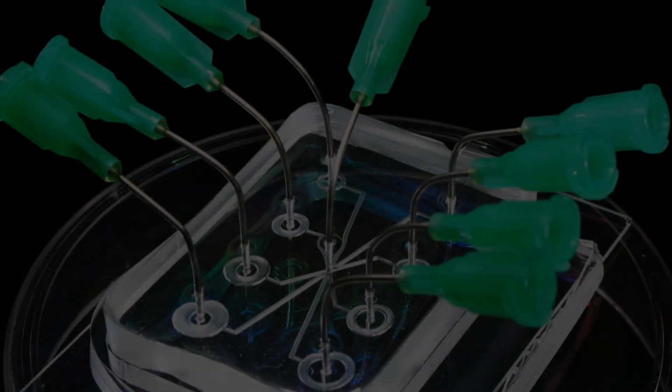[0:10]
Today we are going to build a lab on a chip. The term refers to a microfluidic system that accommodates the entire functionality of a macroscopic laboratory on a substrate about the size of a credit card, for example made of glass or plastic. This technology allows the smallest quantities of a liquid to be analyzed completely and automatically on a single chip.
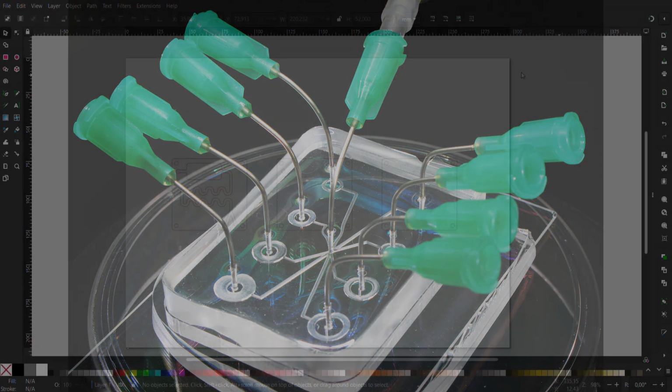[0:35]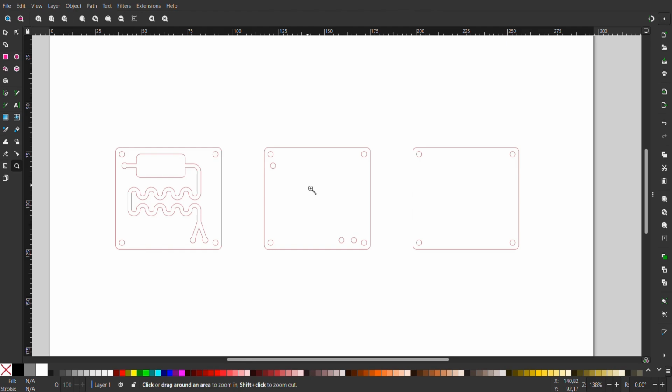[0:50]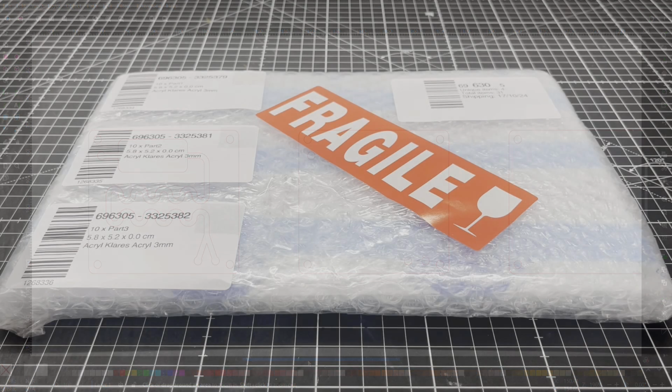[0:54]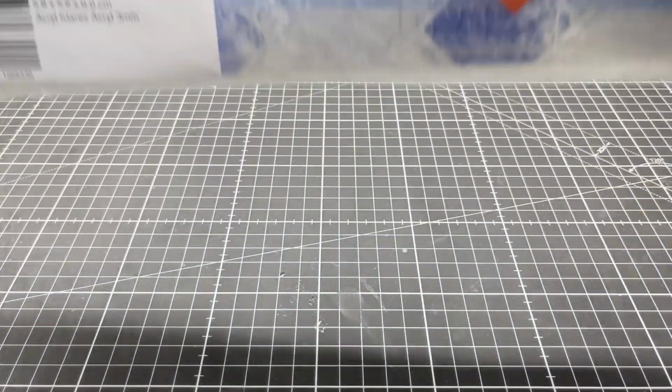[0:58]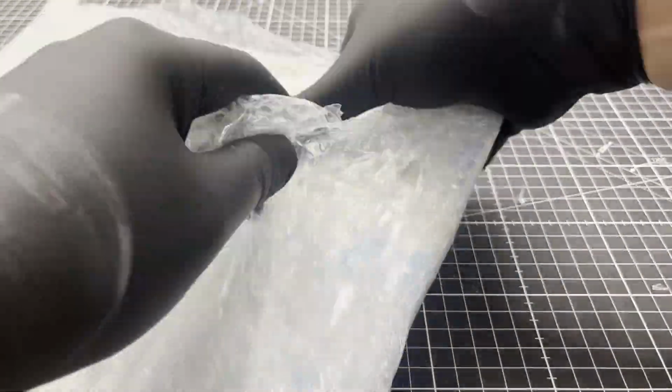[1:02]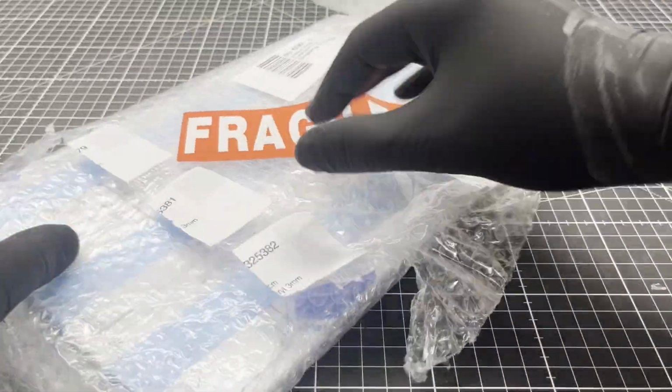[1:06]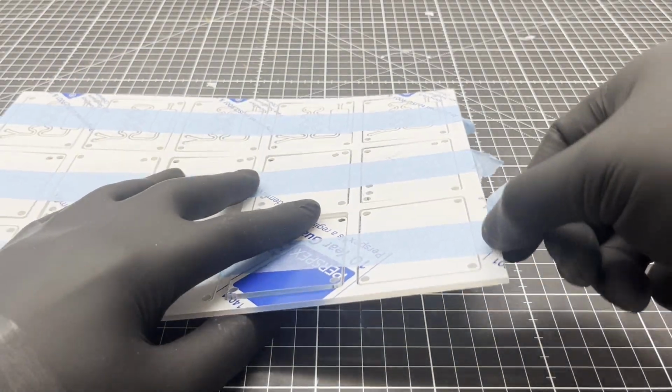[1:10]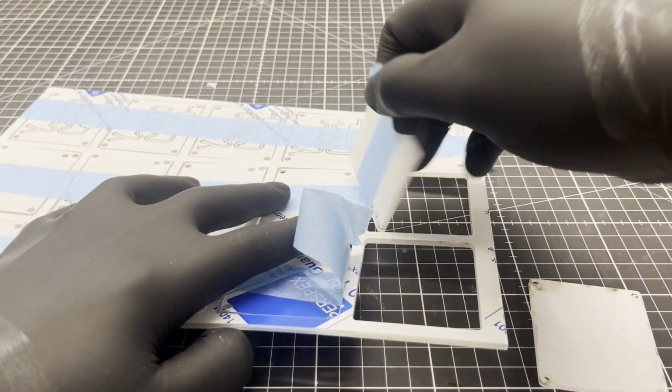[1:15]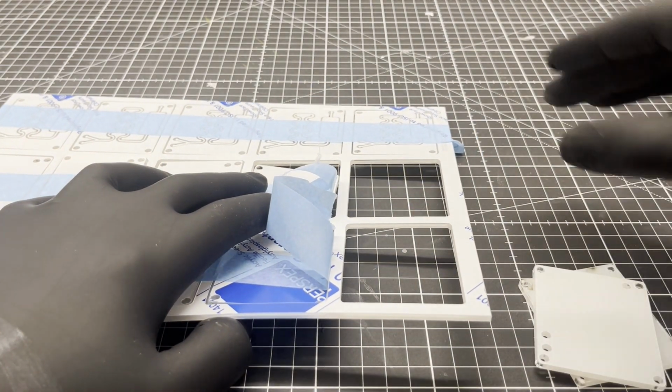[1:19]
The microfluidic device itself consists of three laser-cut 3 mm thick acrylic glass plates. I designed them in Inkscape, a freeware 2D vector drawing program. Since I don't own a laser cutter, I had the parts made by an online service. The quality of the acrylic glass that they are using is amazing. It even withstands ethanol and isopropanol.
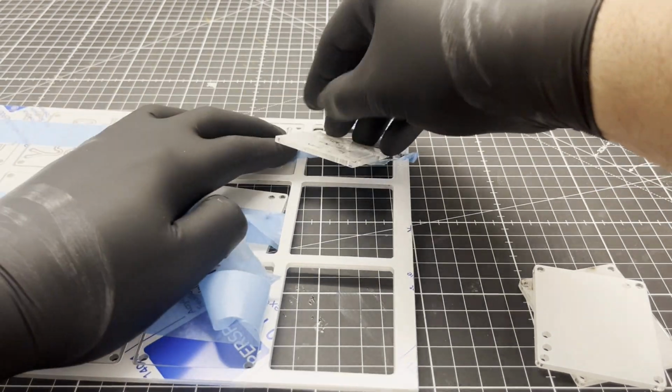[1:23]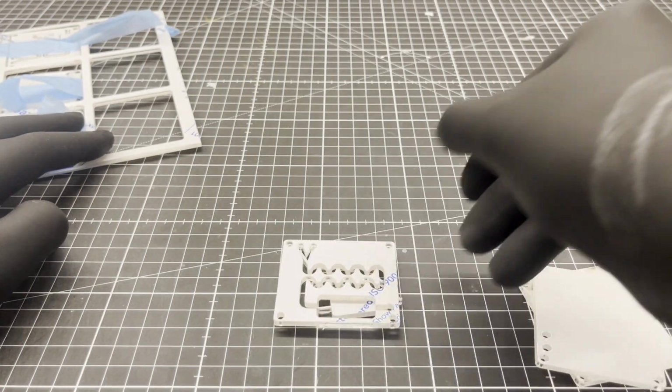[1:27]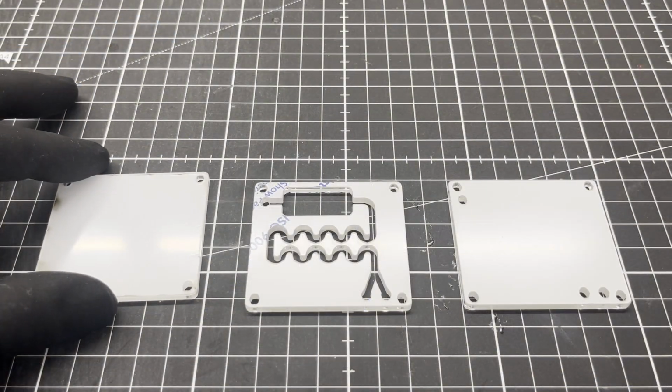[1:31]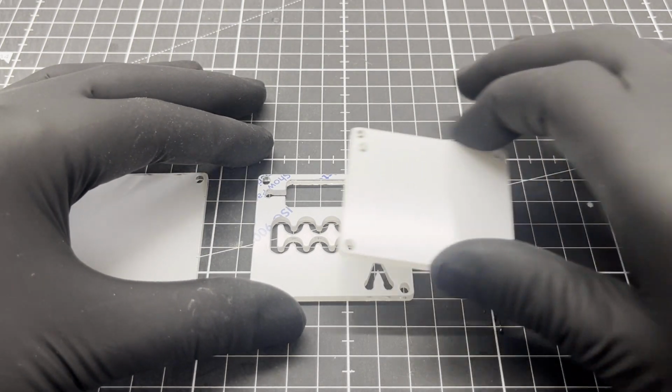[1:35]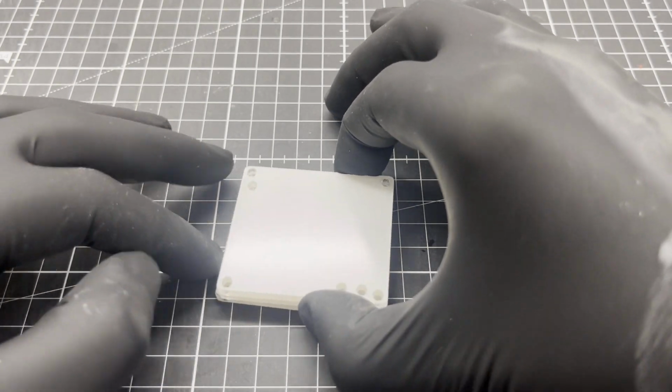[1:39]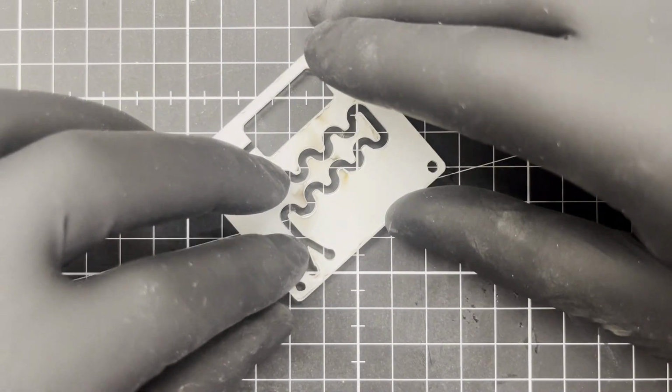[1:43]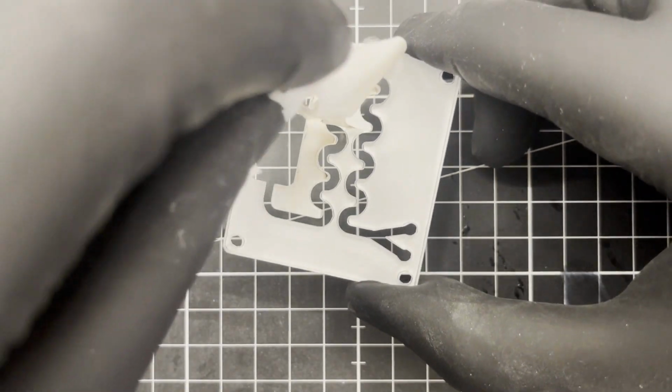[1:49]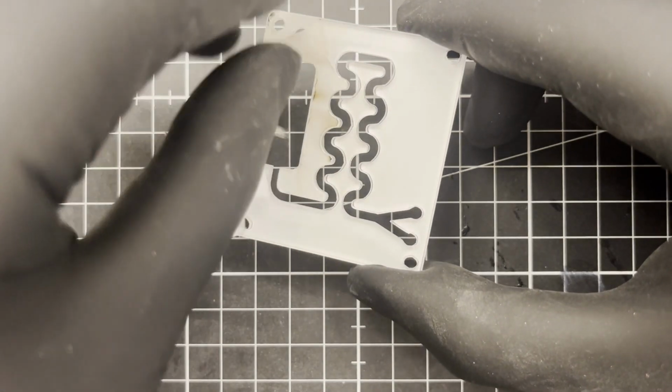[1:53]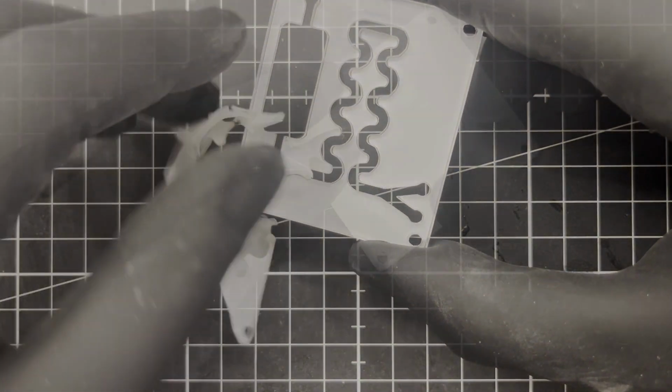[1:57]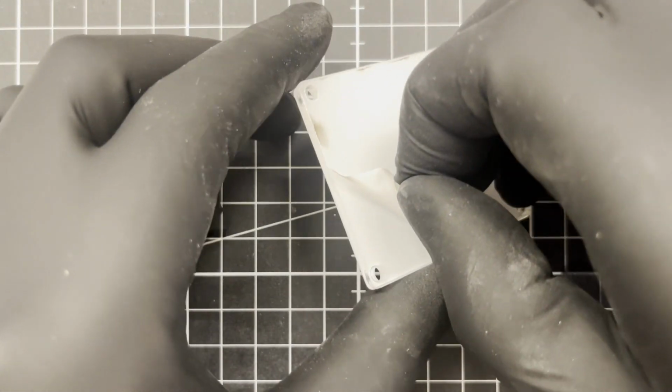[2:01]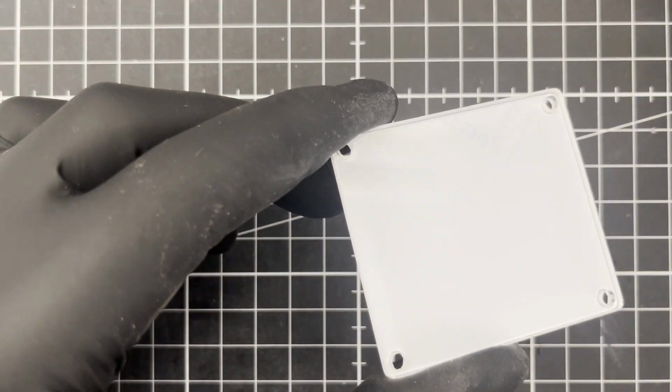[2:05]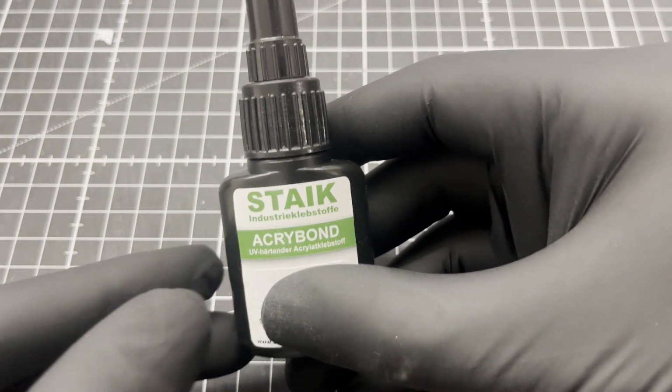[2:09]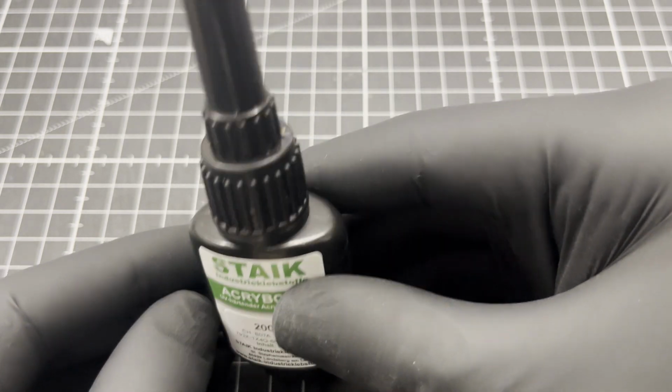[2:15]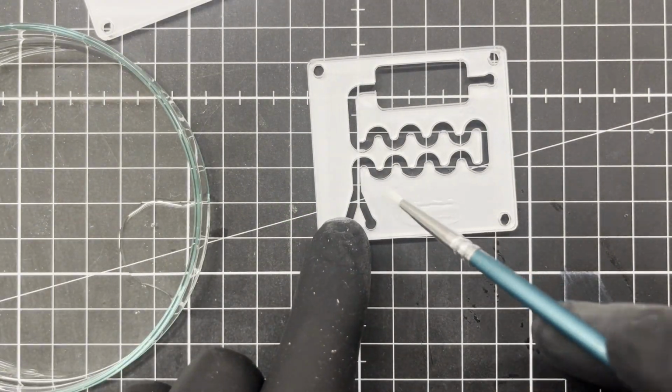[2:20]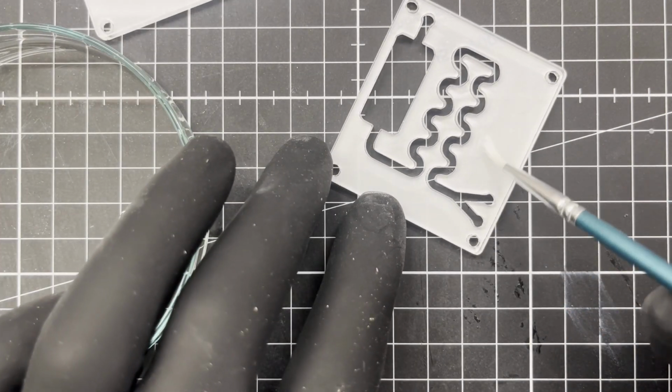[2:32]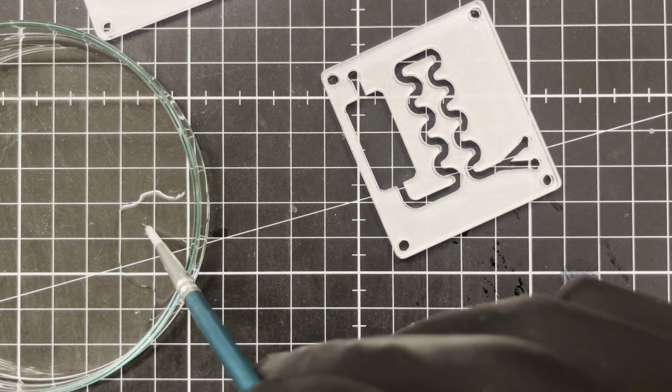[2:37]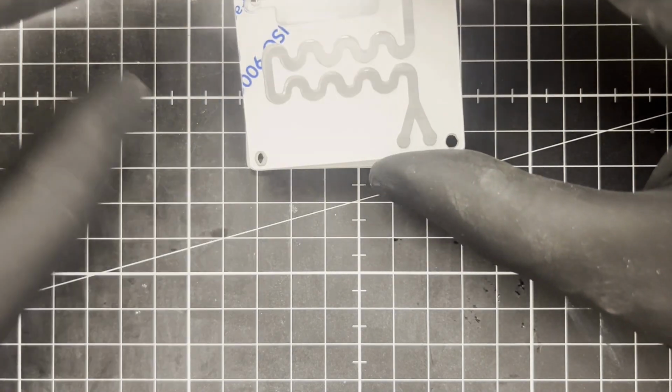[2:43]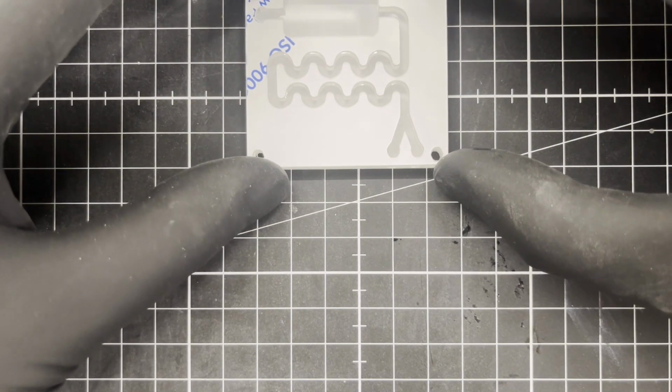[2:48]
I use a special acrylic glass adhesive. It only bonds acrylic glass and is activated by UV light. This allows corrections to be made before the final bonding. If you don't need an optical pass through the device, you can also just sandwich two laser engraved plates together. This allows much finer channels. Remember, always work as cleanly and precisely as possible, because the entropy of the universe fights back all the time.
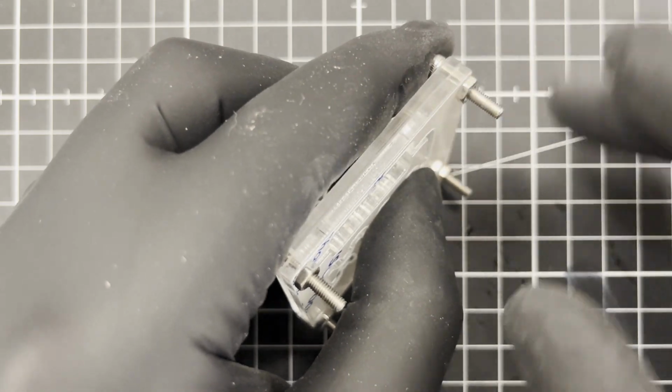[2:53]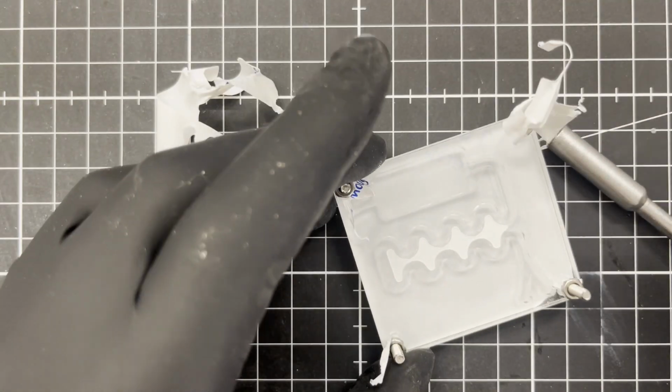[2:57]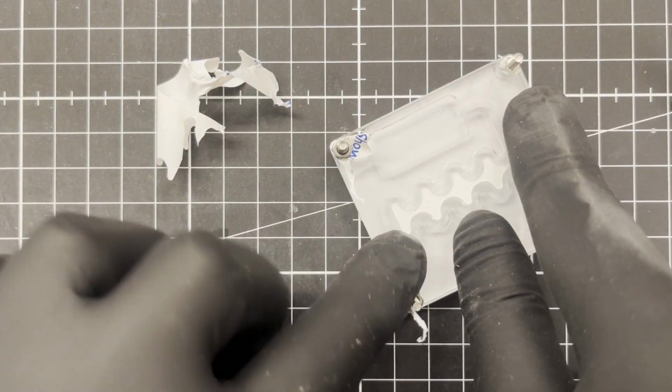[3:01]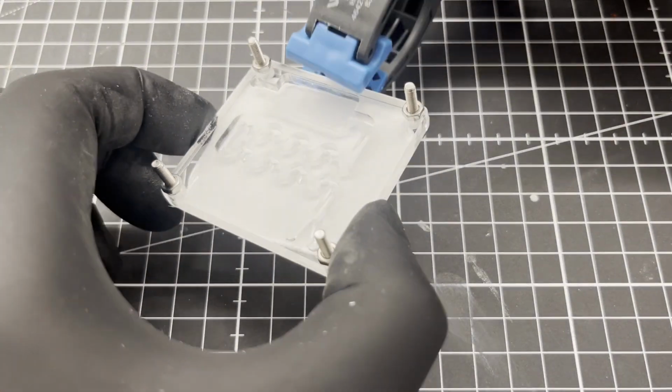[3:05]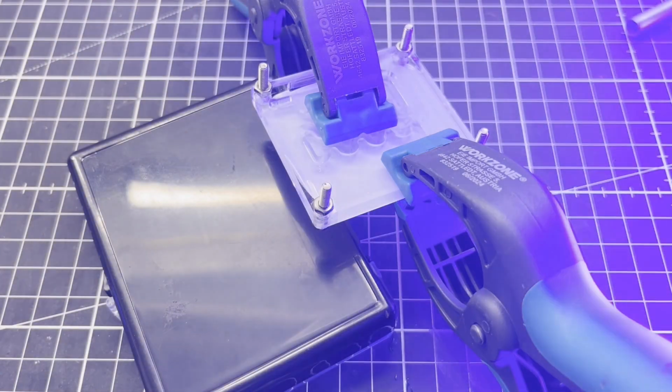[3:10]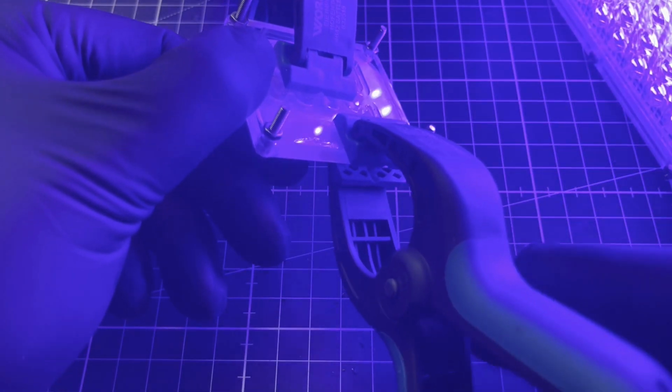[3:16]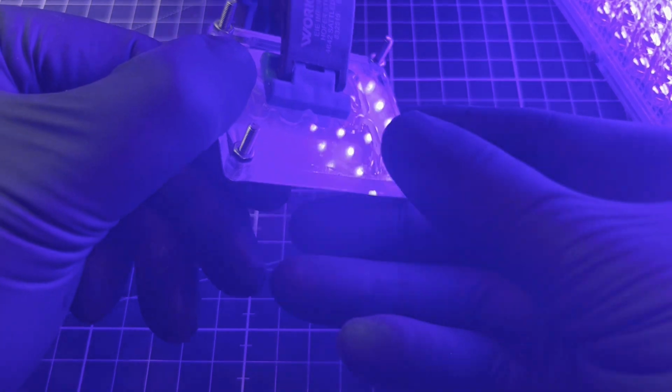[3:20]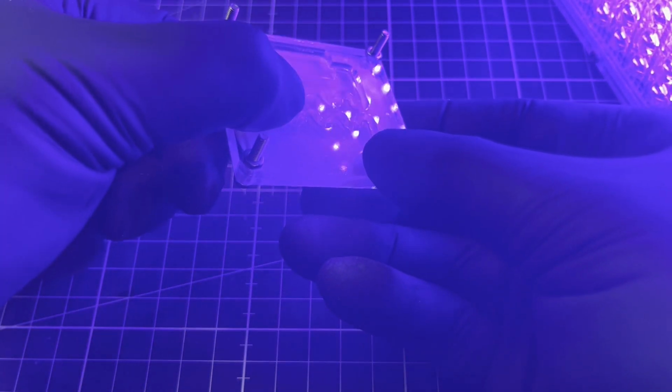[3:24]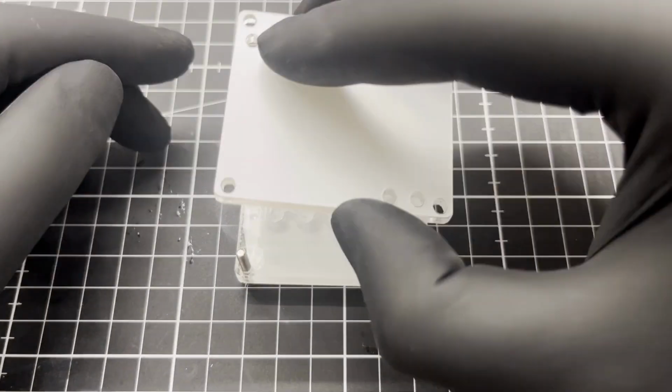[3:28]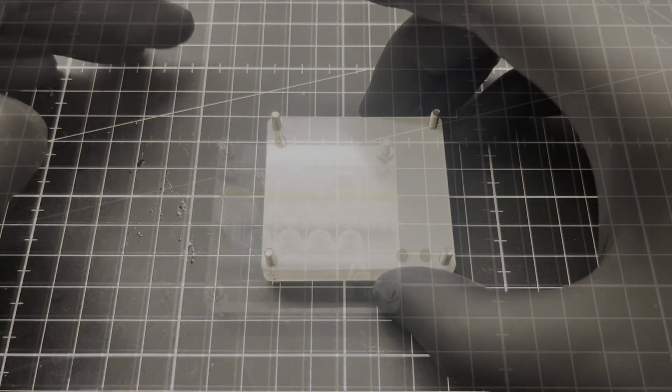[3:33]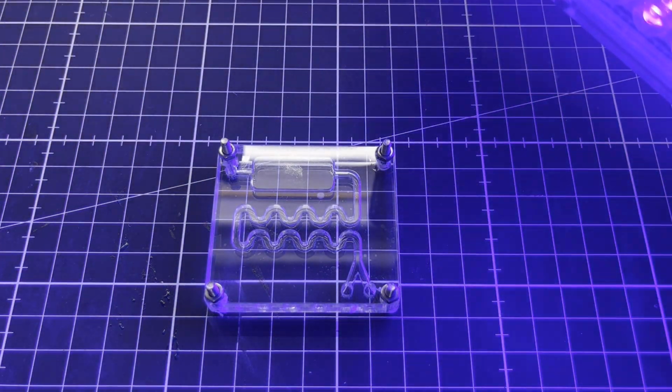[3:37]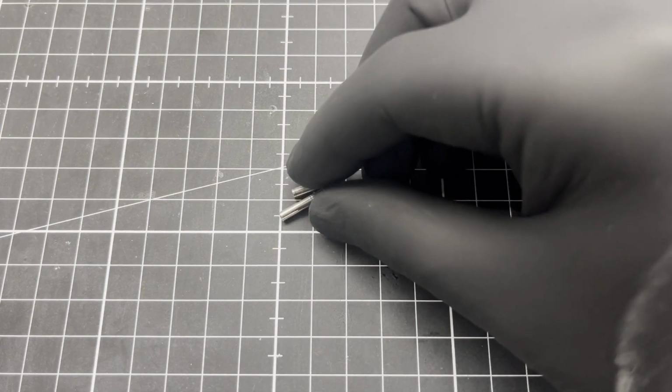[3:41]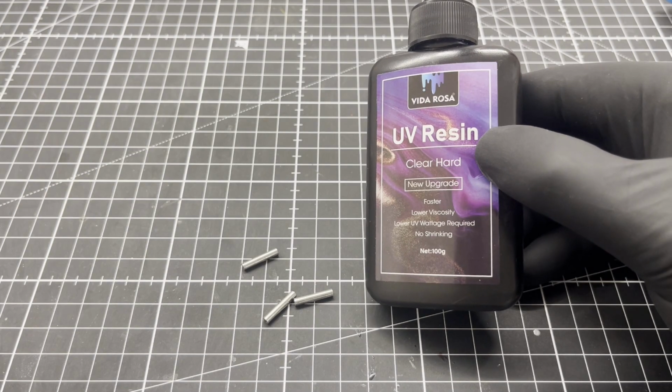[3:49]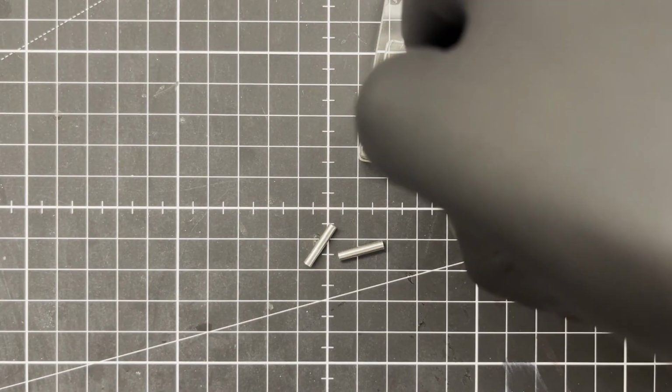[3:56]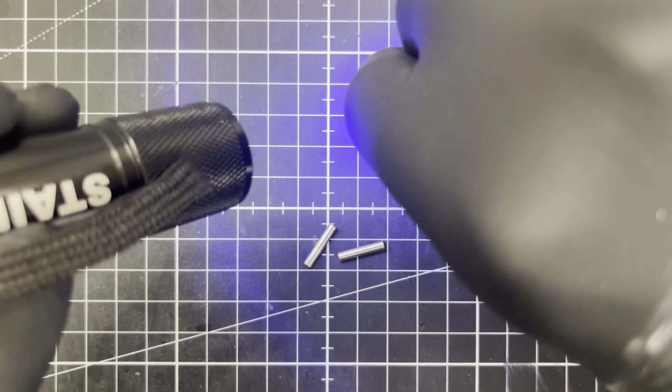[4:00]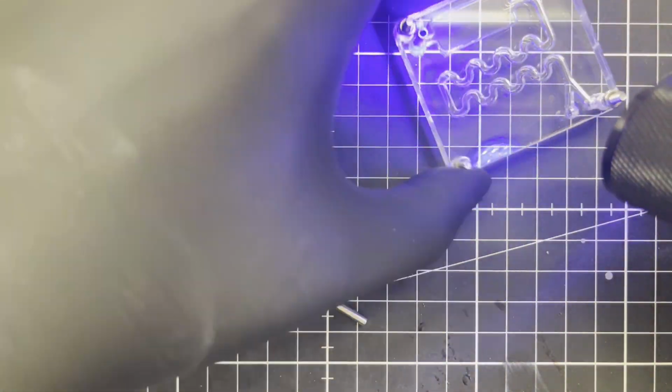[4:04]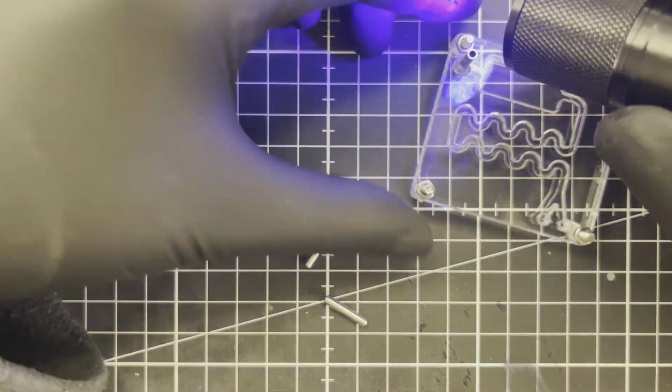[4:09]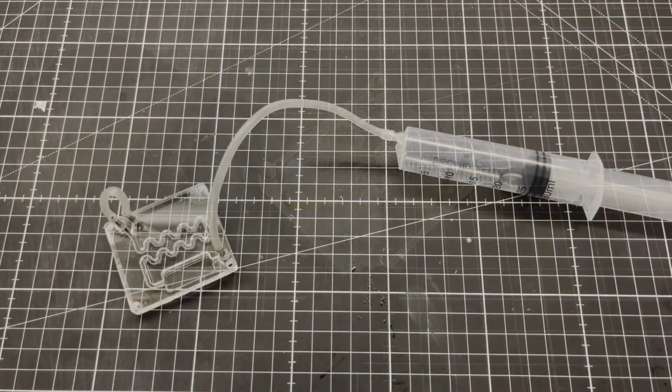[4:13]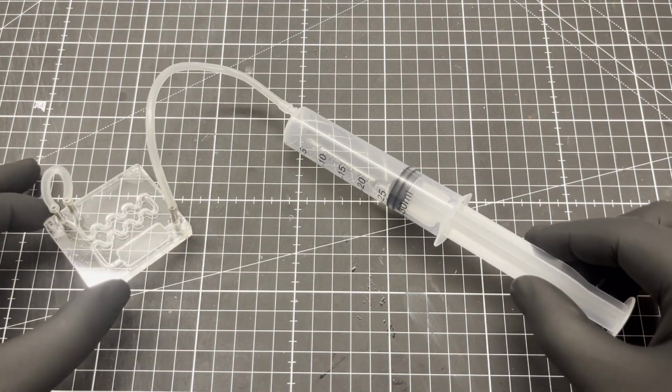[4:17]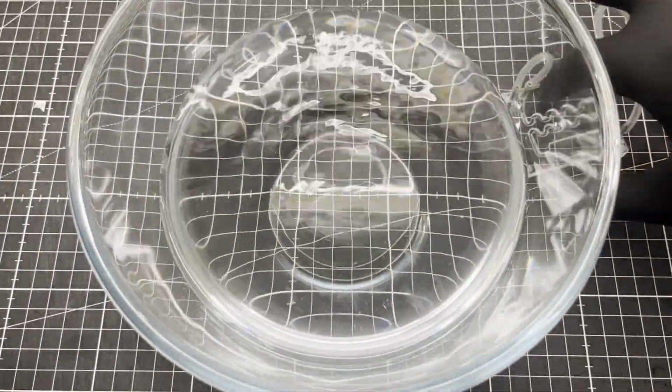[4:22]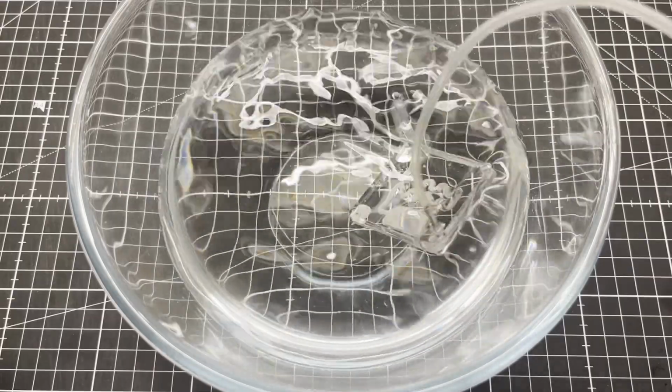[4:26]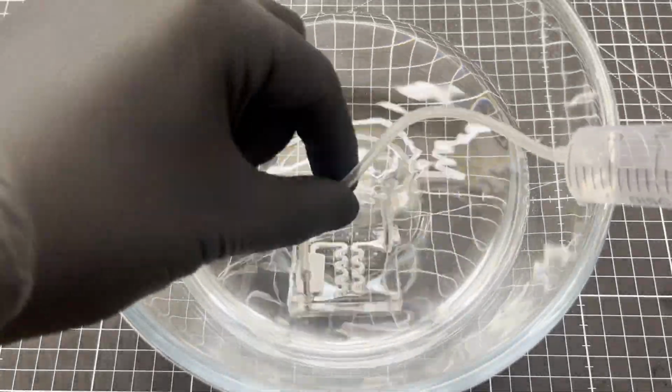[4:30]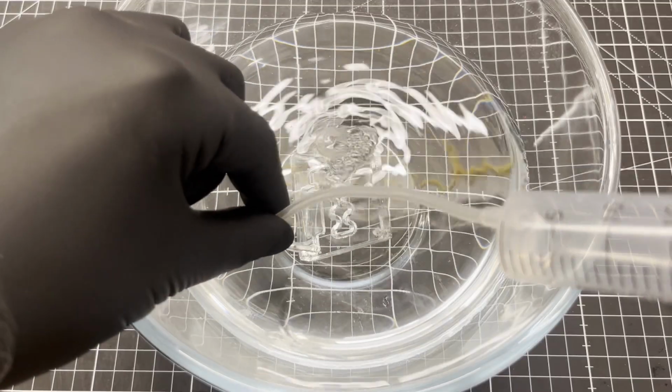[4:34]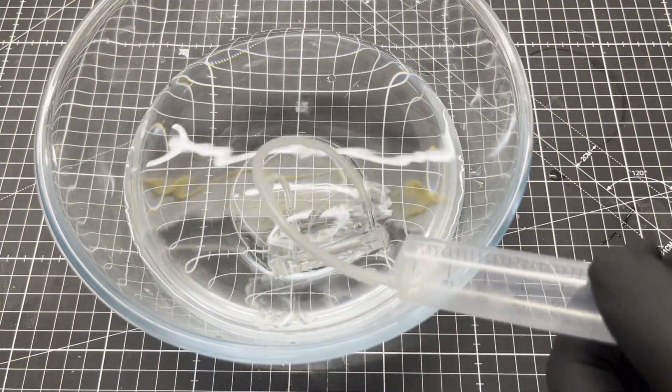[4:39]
Off camera, I prepared 3 stainless steel tubes, 3 by 2 by 15 mm. I use common UV curing resin to glue in the stainless steel tubes. Moment of truth. Is the microfluidic device airtight and therefore waterproof? Apparently not. After a little rework, everything is fine.
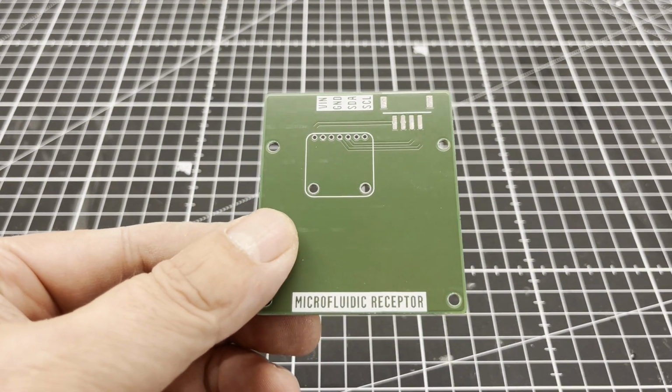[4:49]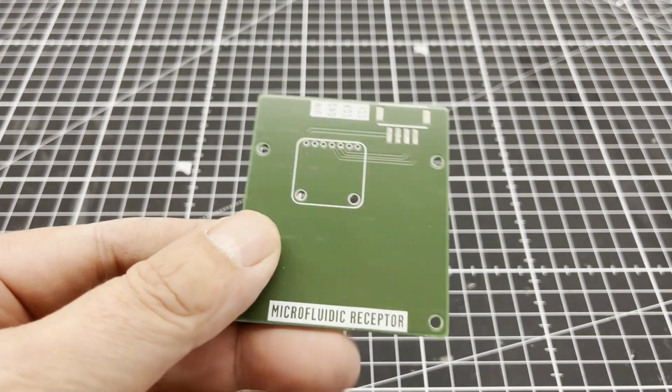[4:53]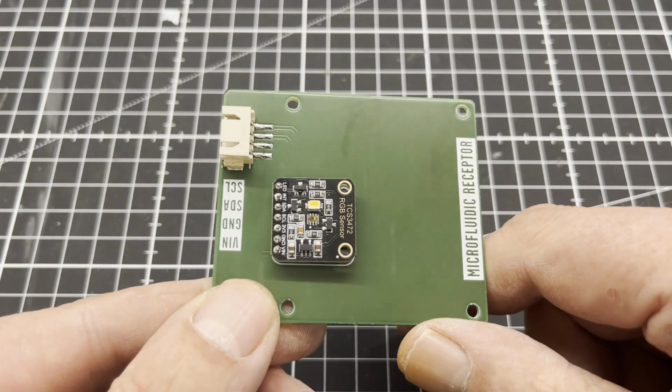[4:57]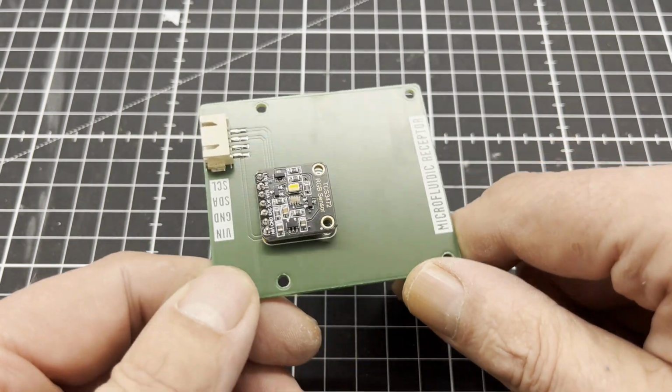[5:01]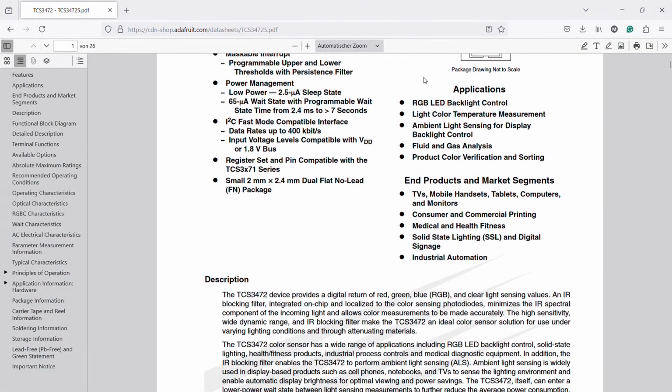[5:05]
The chip is basically just a PCB with a TCS34725 RGB color sensor with an infrared filter and a GCT connector to communicate with a microcontroller via I2C.
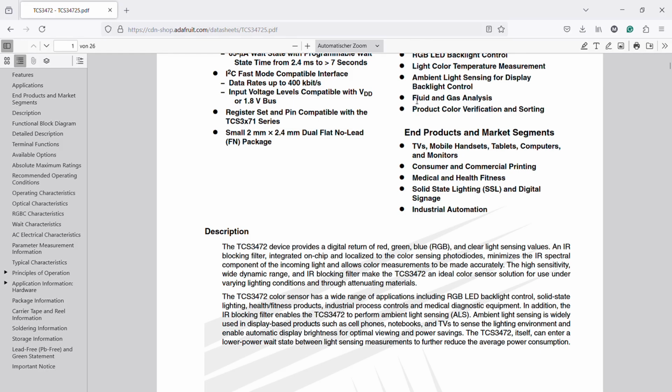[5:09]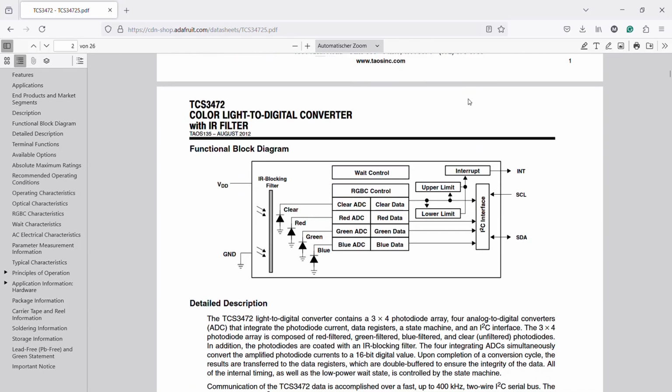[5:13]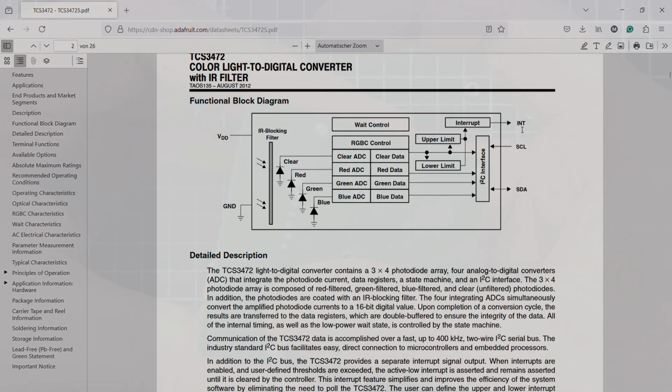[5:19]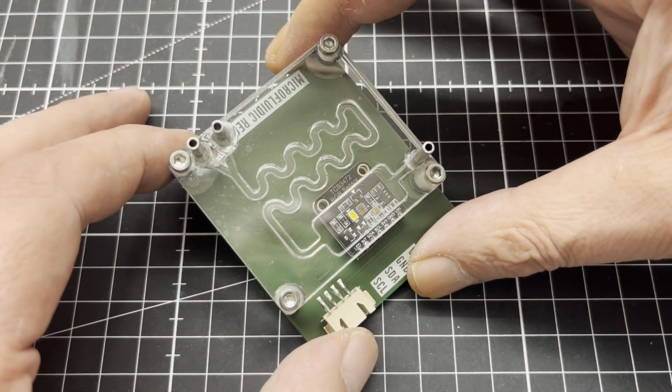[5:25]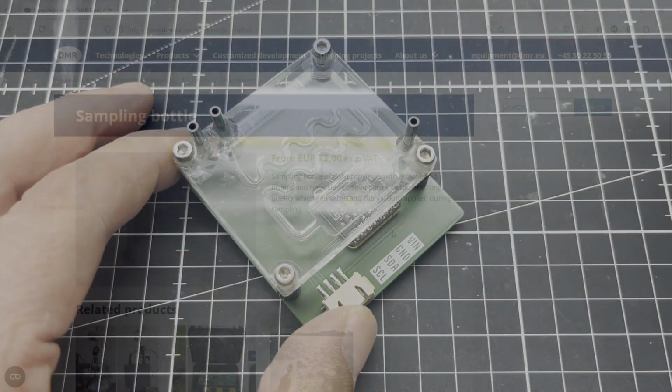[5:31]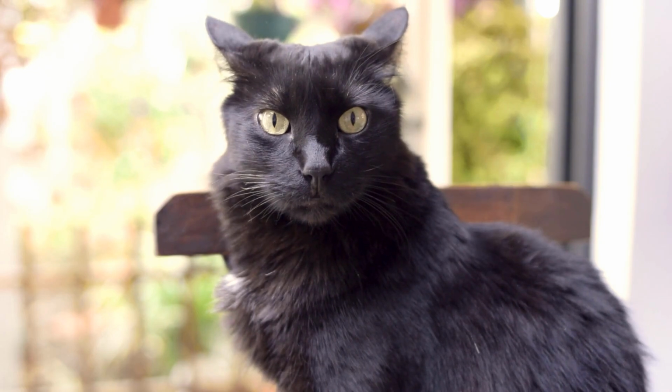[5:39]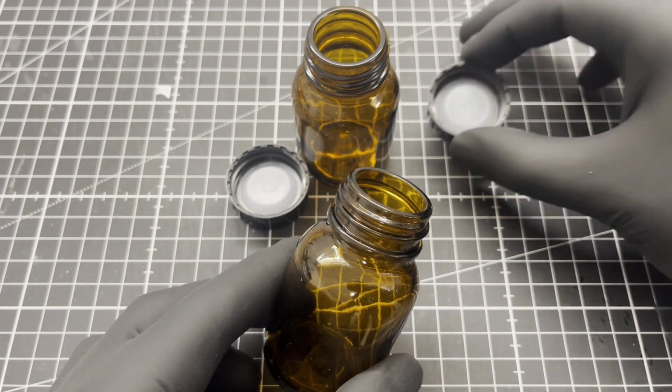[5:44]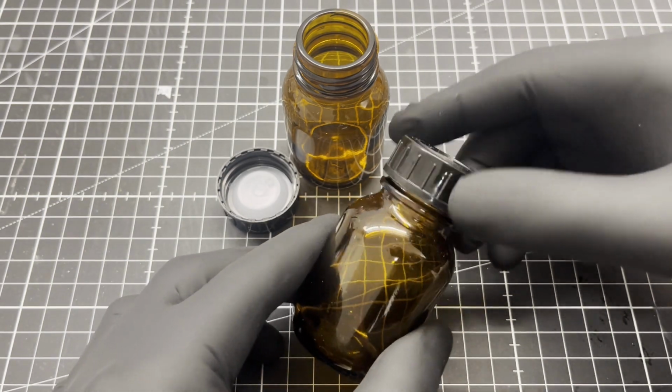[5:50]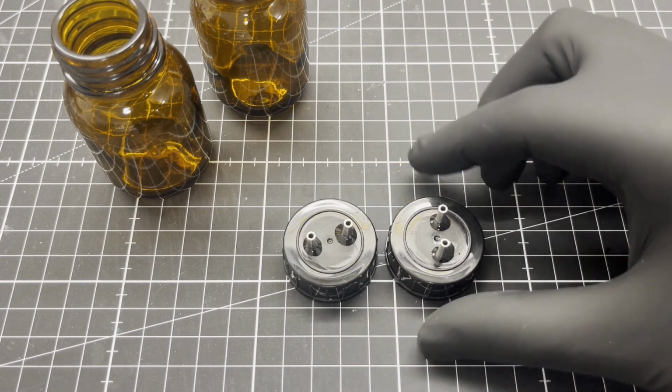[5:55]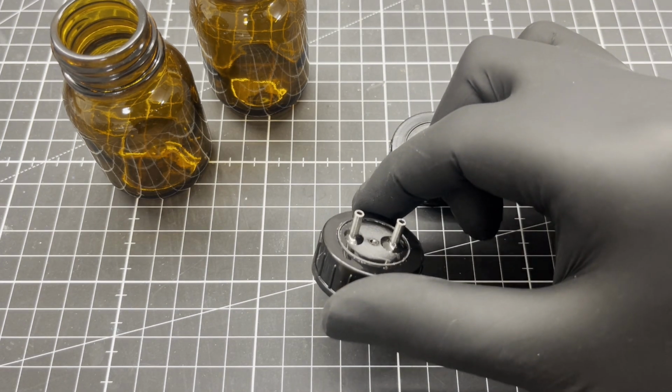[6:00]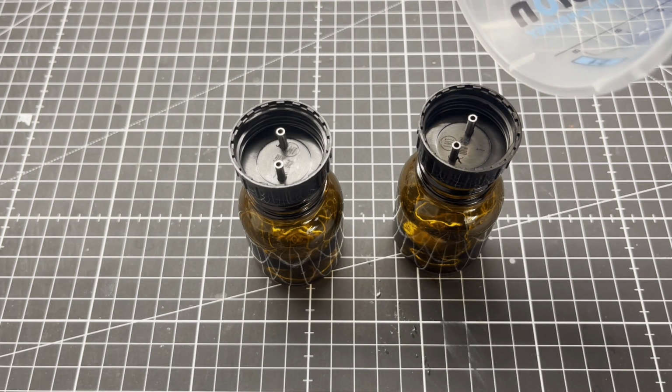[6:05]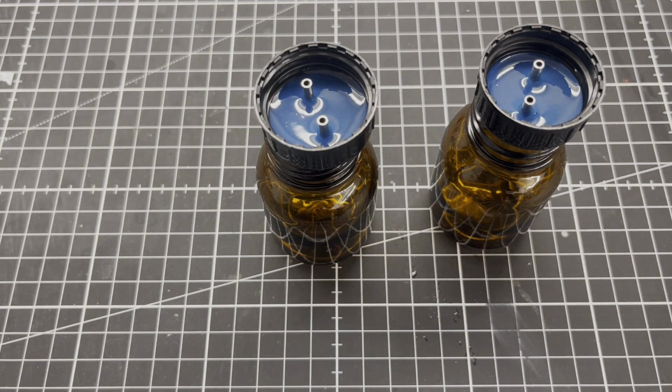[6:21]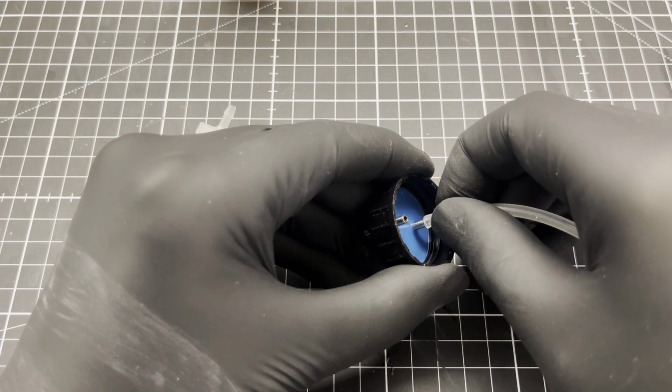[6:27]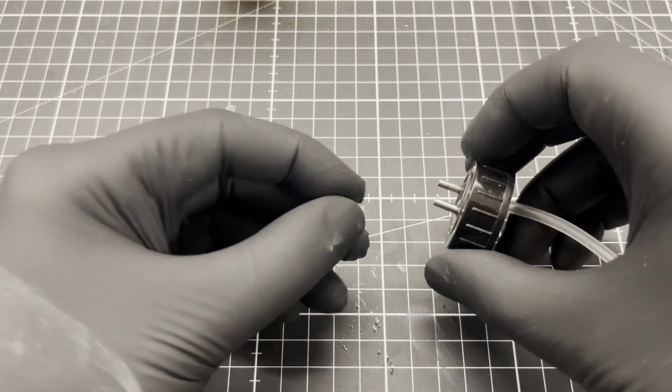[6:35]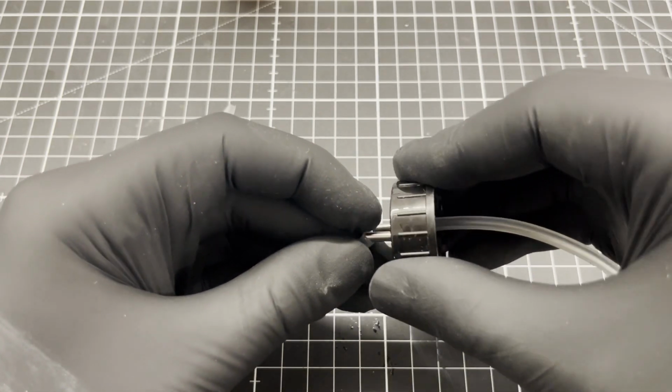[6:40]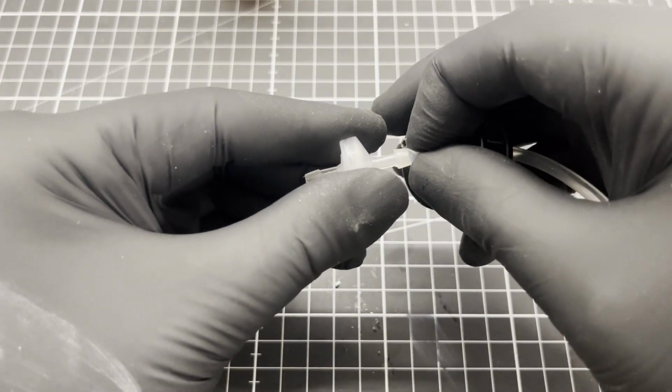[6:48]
Next, we are moving on to the sampling bottles. But why the heck are they so expensive? Fortunately, they are easy to make. I use cheap 50 milliliter amber glass wide neck bottles with screw caps. After drilling the corresponding holes into the caps, I glue two small stainless steel tubes into each. I then poured some two-component silicone into the caps as a new sealing. Then some silicone tubing. And a cheap one-way valve from the aquarium supply store.
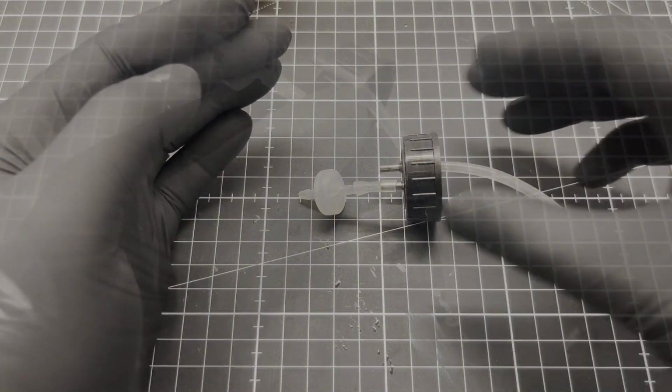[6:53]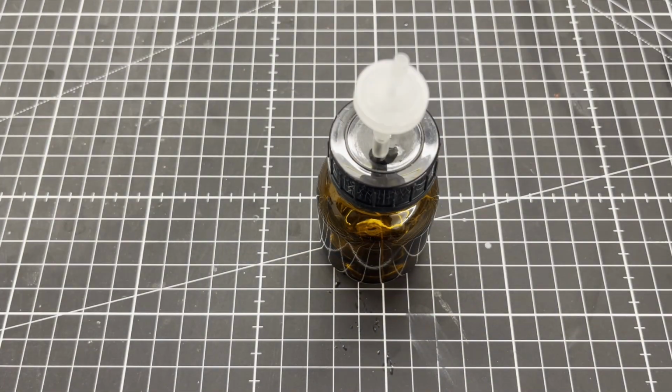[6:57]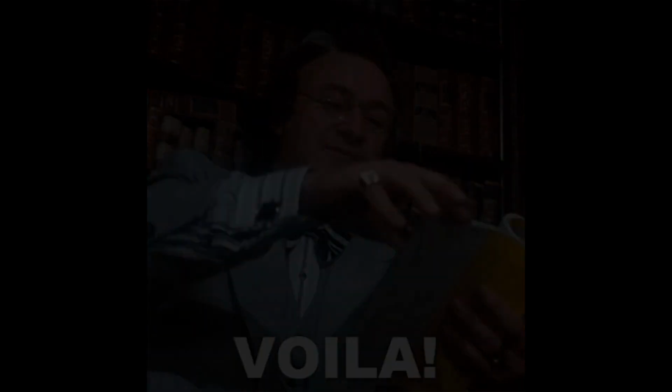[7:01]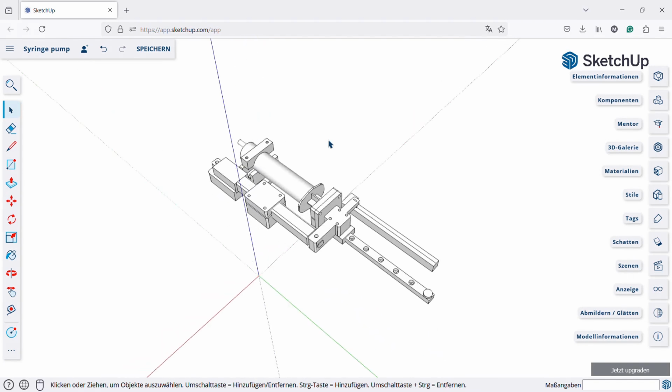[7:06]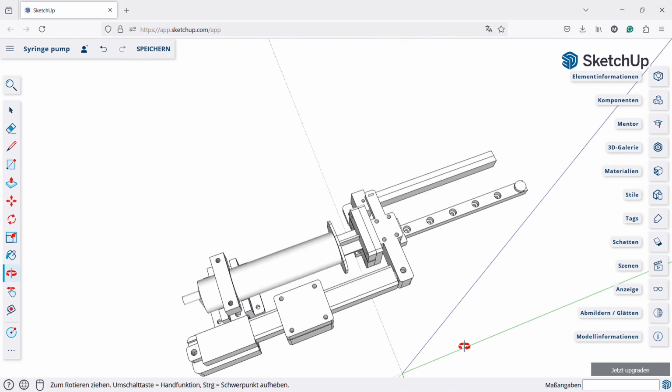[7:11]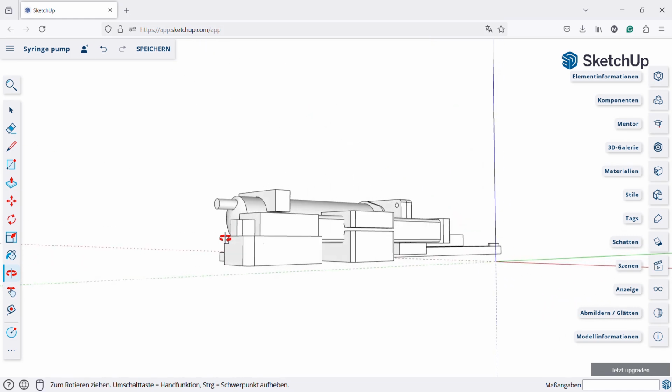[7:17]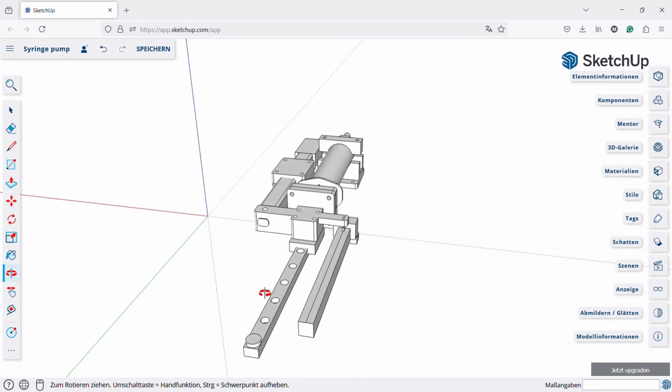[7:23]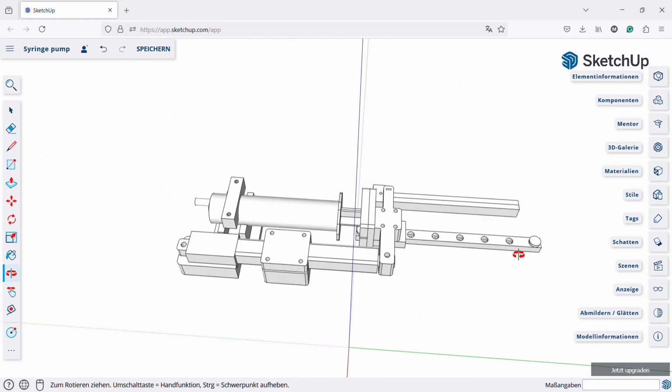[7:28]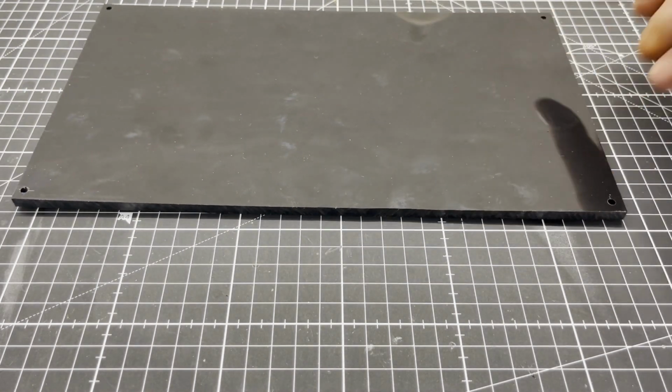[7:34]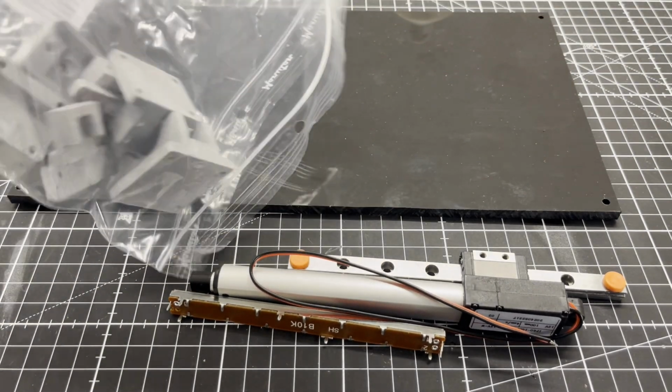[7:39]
The next thing we need is a pump. I decided on a syringe pump, which I designed in CAD. I'm using a cheap 12 volts linear actuator with a 100 mm stroke, a sliding pot as position feedback, and a mini linear guide. The syringe itself has a volume of 30 milliliter. 10 3D printed parts are needed for the mechanical structure, plus a 6x300x160mm Delrin base plate.
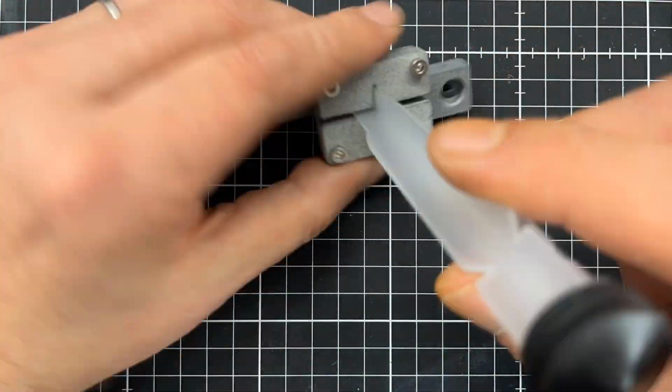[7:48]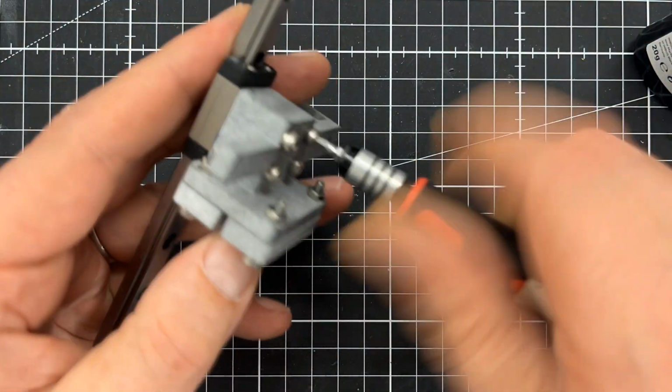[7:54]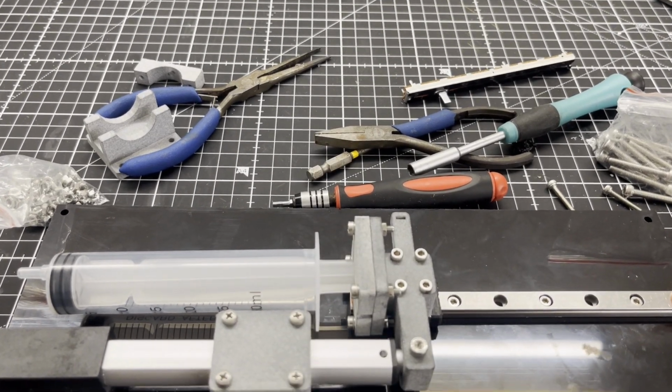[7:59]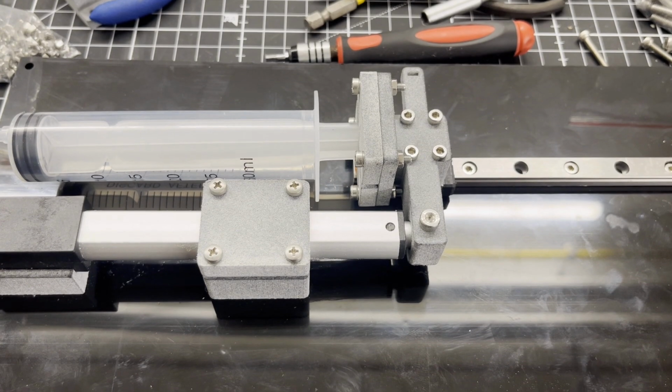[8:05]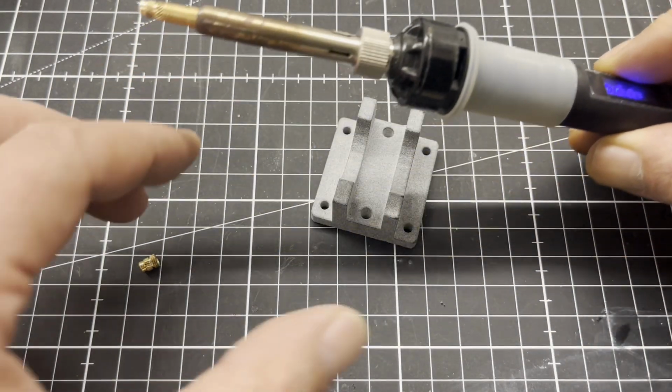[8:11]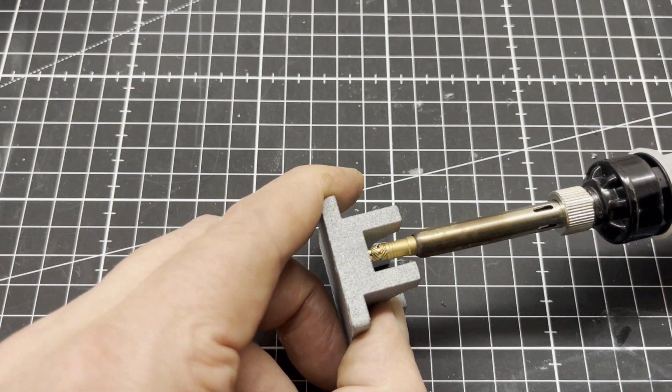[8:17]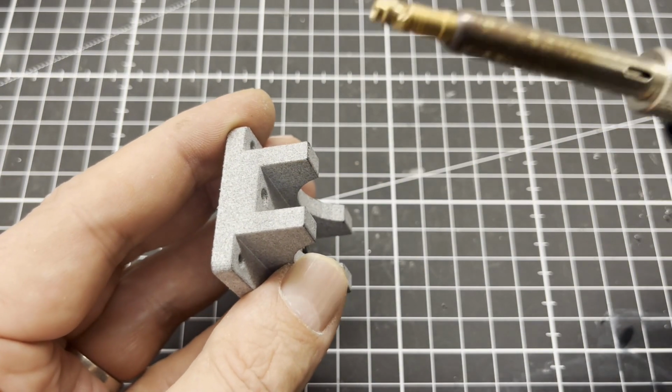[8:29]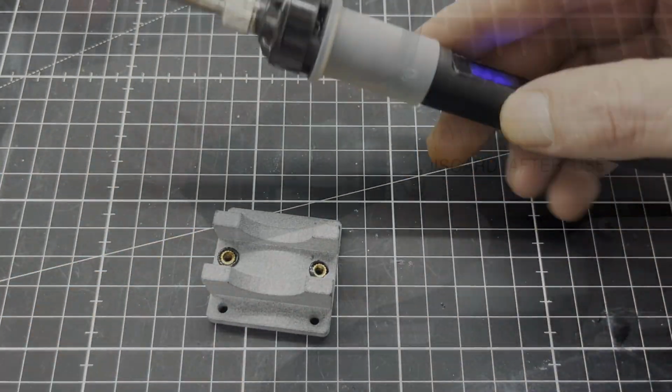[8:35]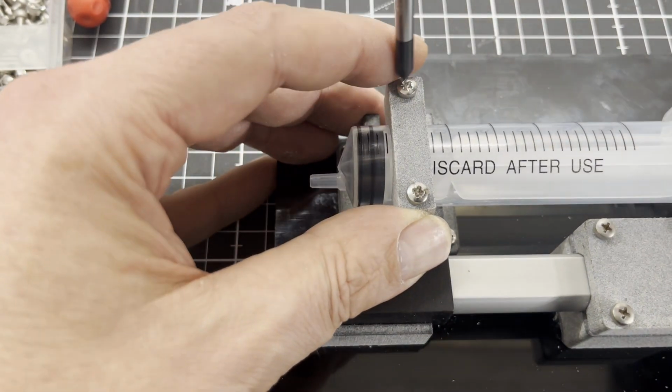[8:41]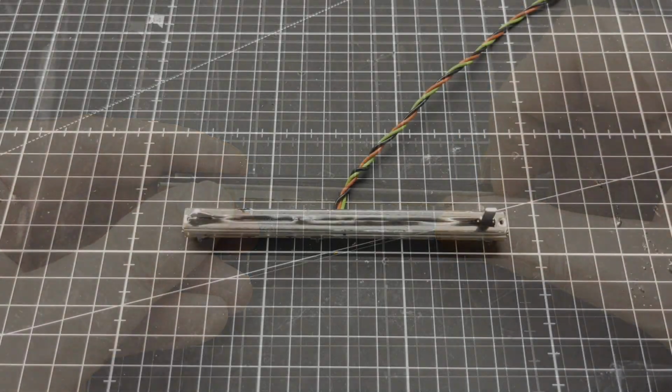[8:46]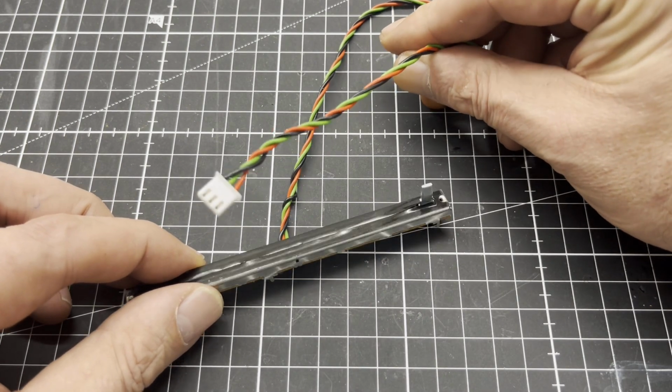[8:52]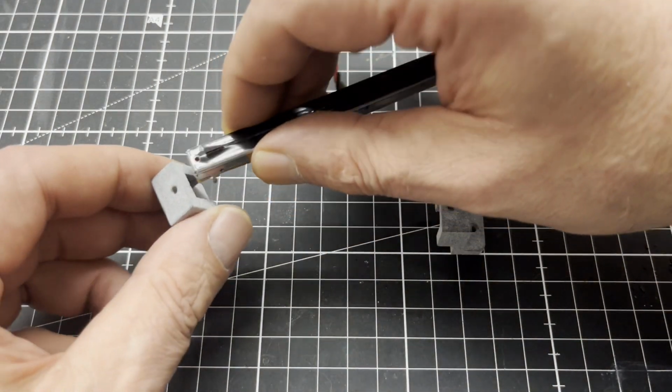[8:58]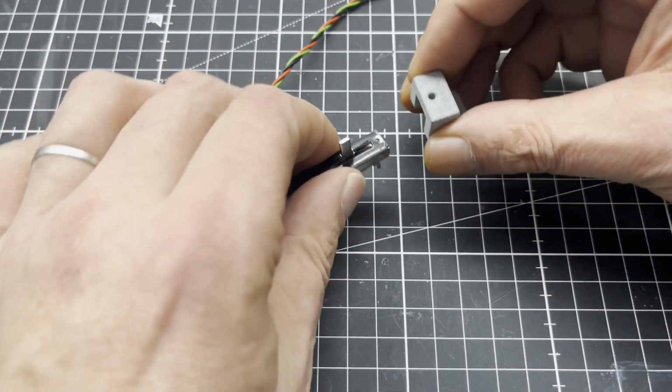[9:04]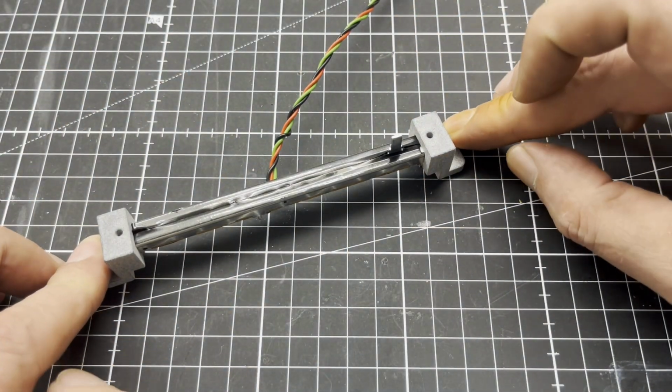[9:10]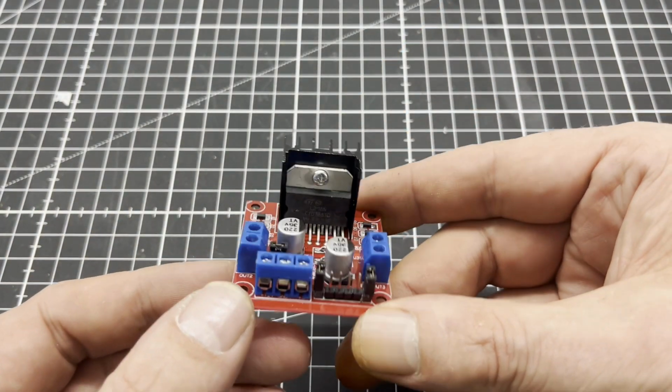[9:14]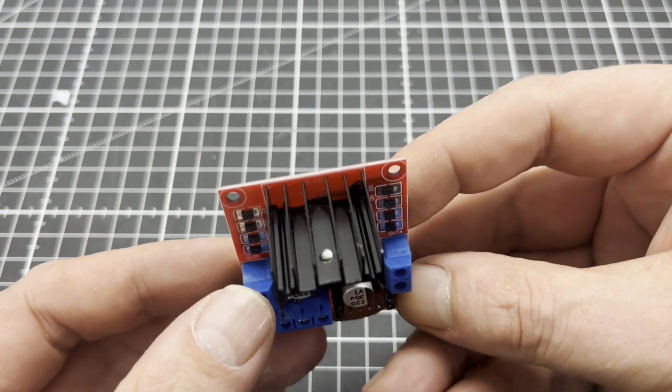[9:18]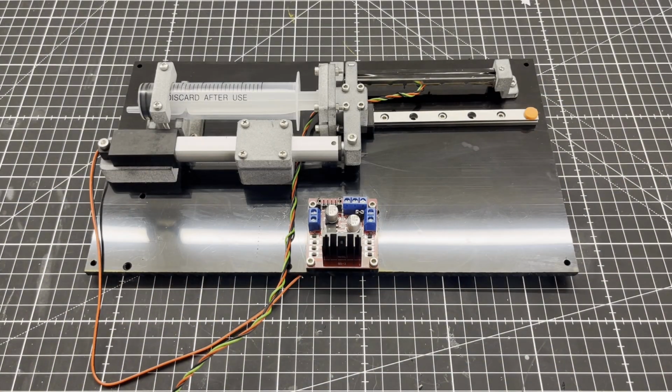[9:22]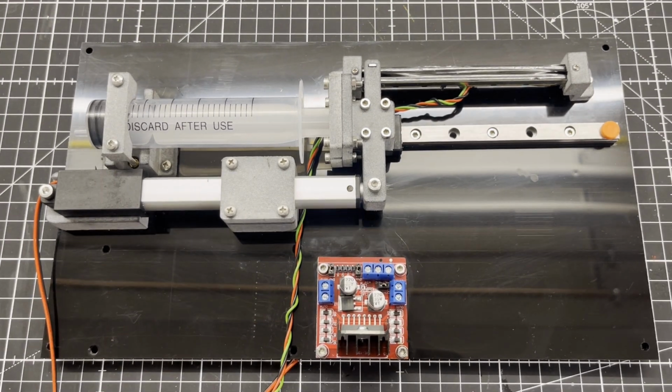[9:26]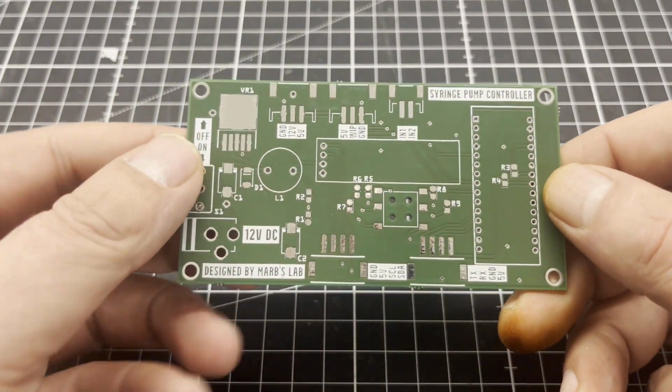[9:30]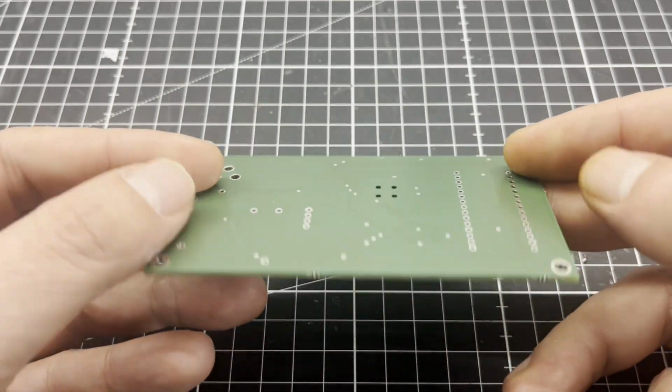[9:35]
I use a L298N motor driver breakout. These are super cheap and more than adequate for the application. Since I want to be able to use the syringe pump as a standalone device, I have also designed a programmable pump controller.
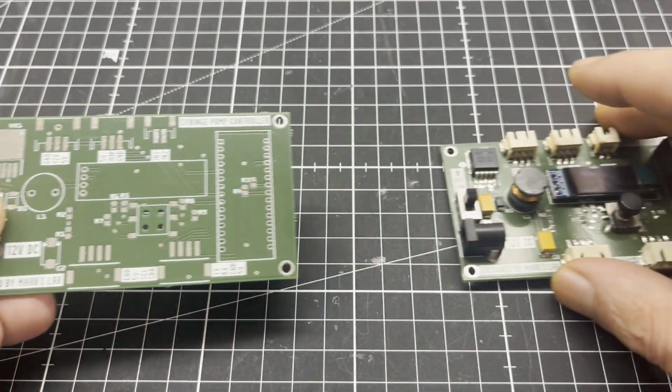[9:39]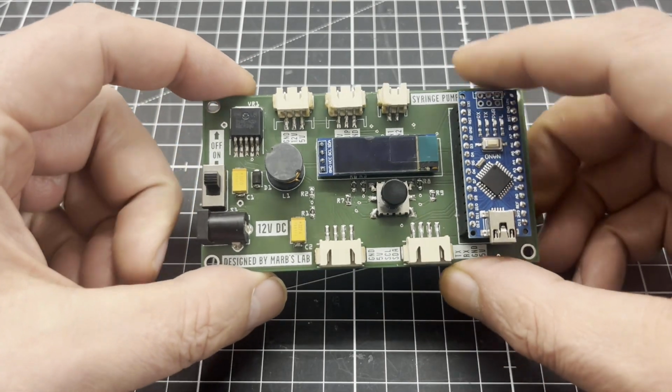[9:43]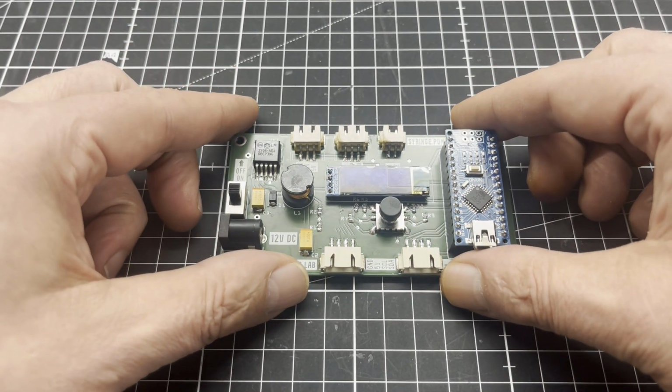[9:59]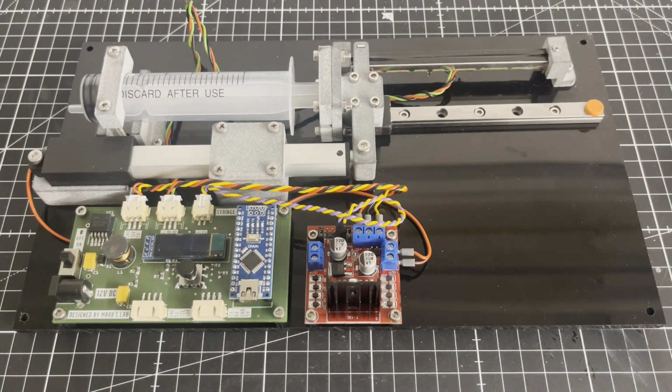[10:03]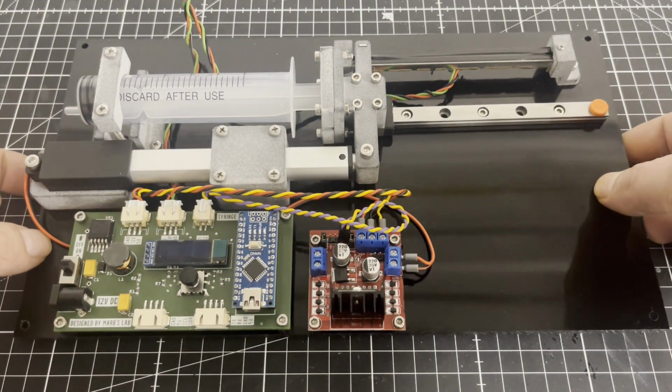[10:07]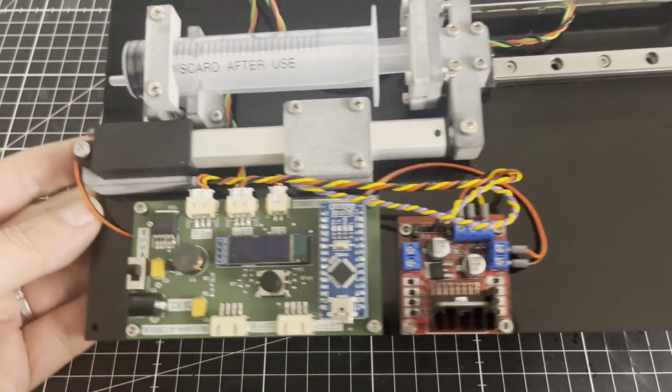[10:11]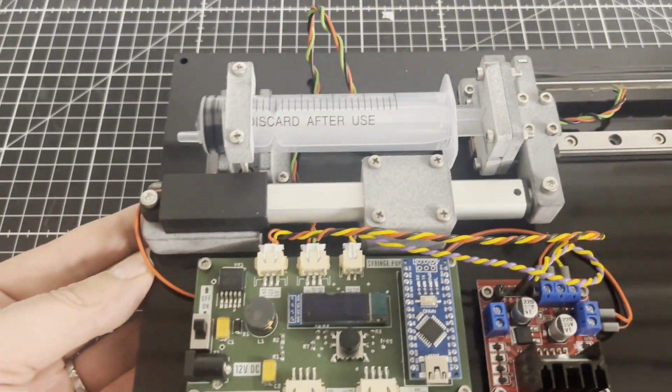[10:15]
Now that all the hardware is ready, we can move on to the wetware, commonly known as chemistry. I have opted for the biochemical detection of glucose. For this, we use the enzyme glucose oxidase and colorimetry.
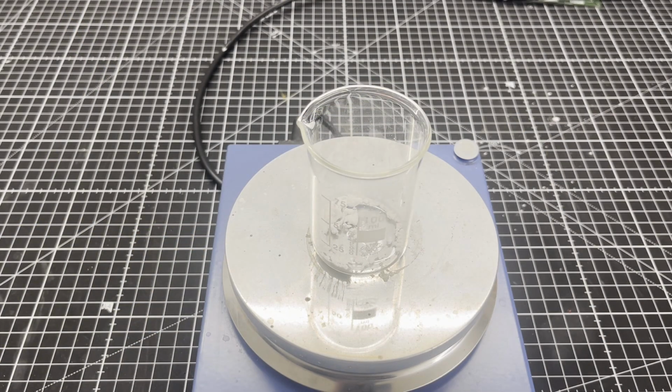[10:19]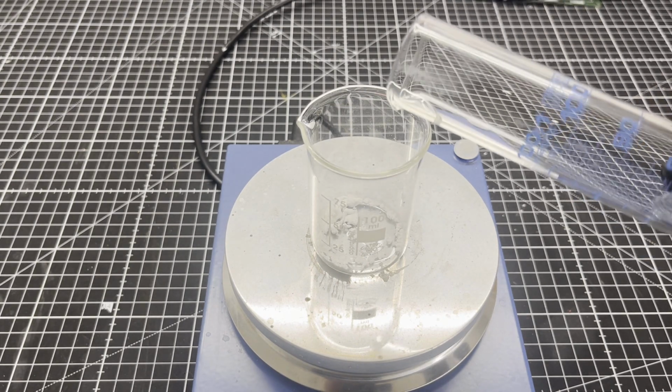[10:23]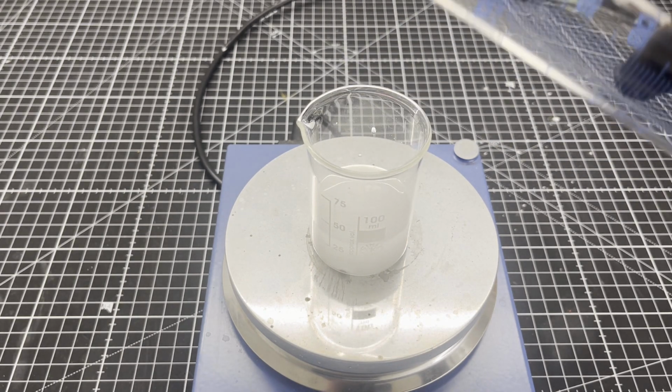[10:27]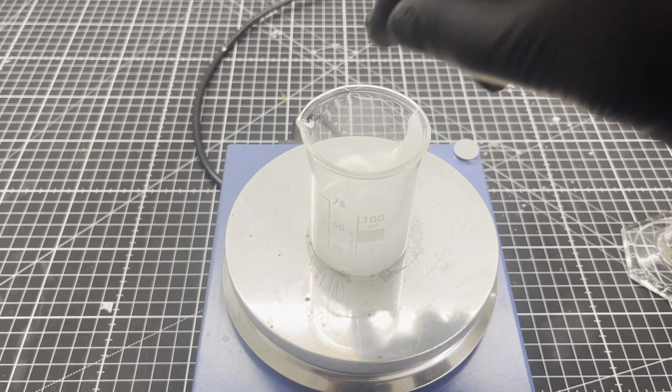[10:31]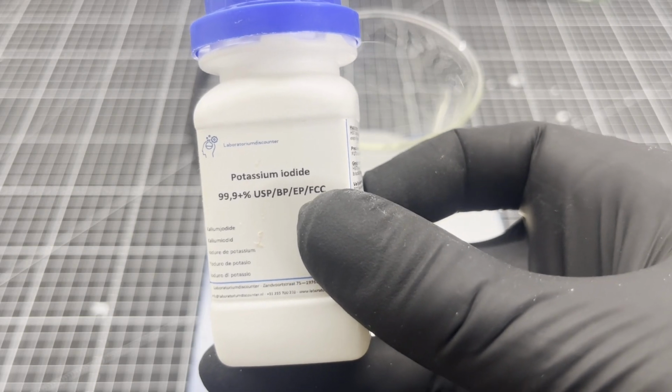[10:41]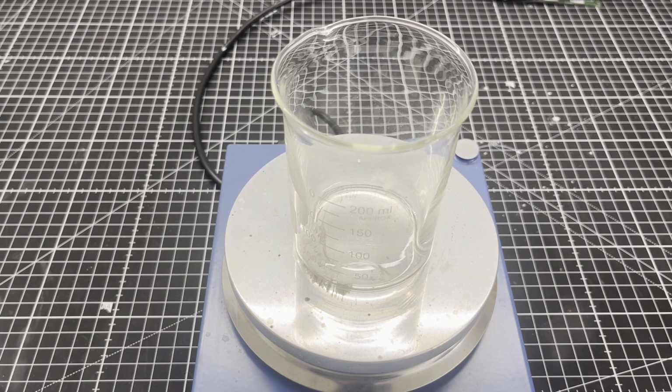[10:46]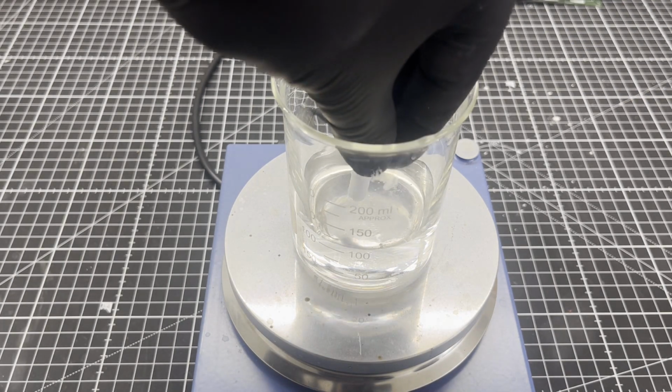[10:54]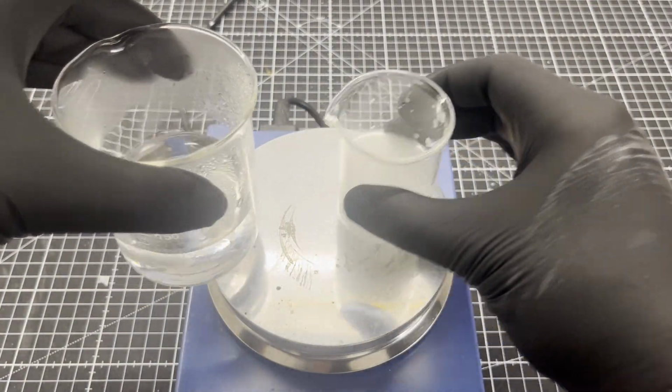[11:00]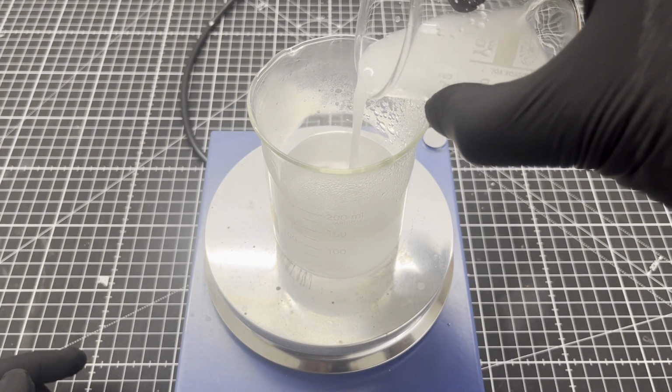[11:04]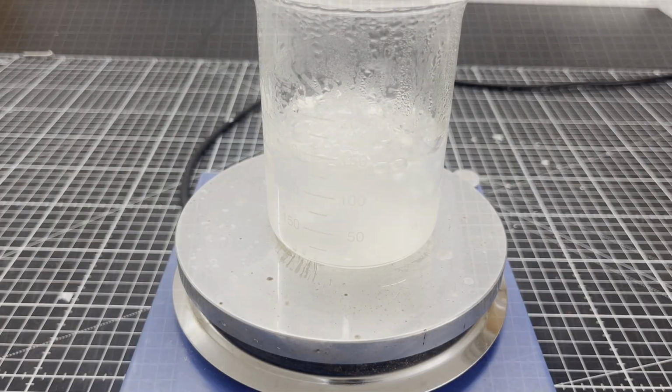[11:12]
First, we prepare a suspension from 0.5 gram starch and 35 milliliter distilled water. A solution of 0.8 grams potassium iodide and 100 milliliter distilled water is then prepared. After the potassium iodide solution has been brought to the boil, the starch suspension is added. It's then allowed to boil for a few more minutes.
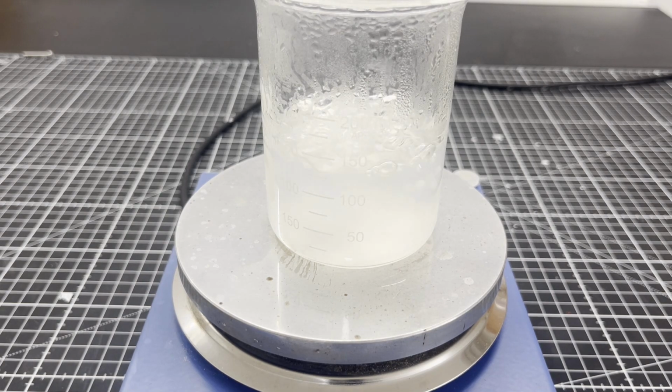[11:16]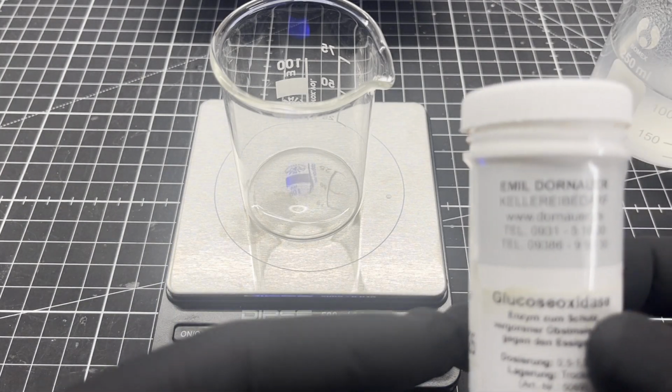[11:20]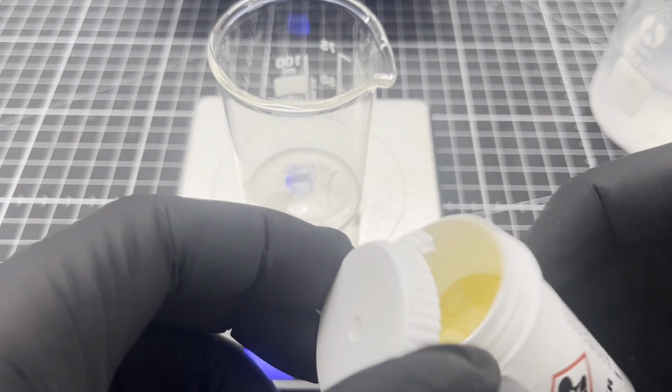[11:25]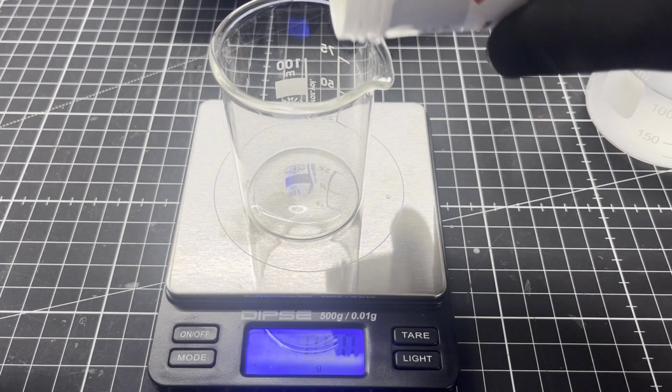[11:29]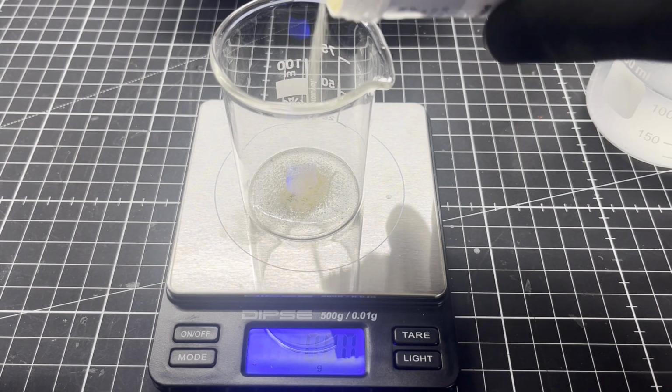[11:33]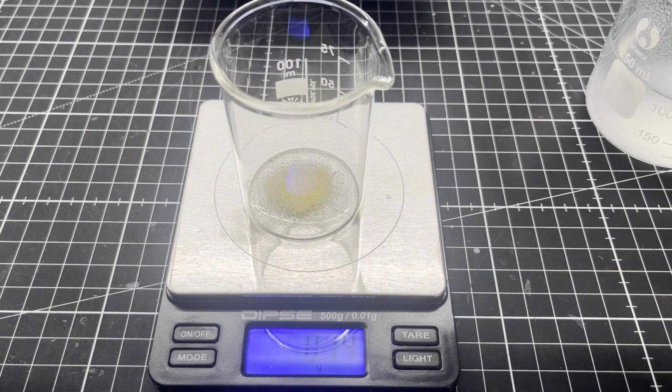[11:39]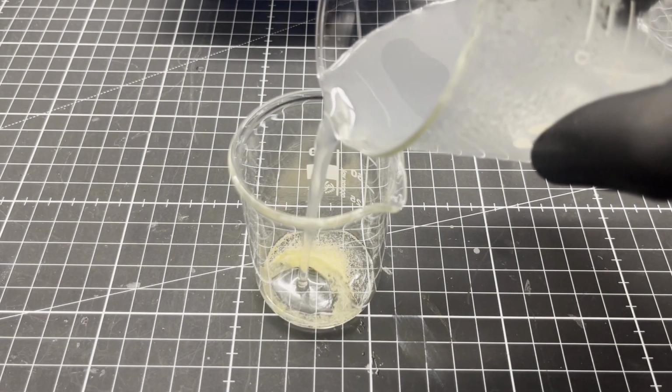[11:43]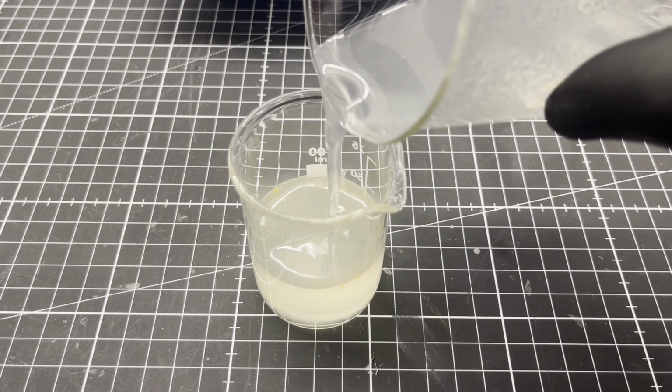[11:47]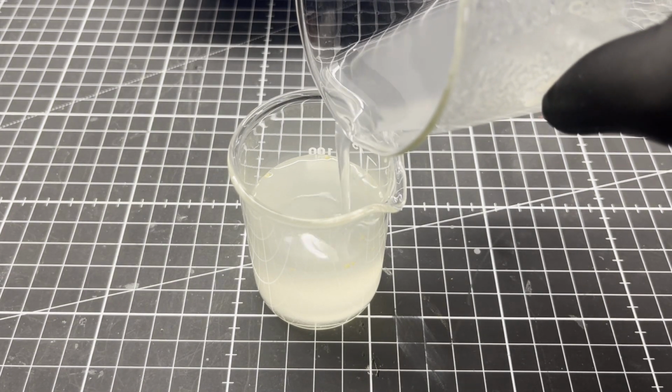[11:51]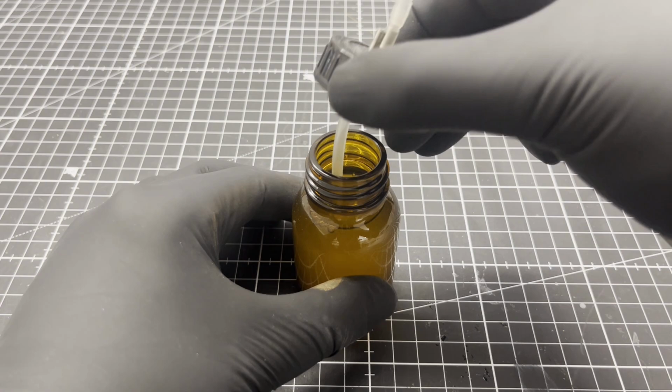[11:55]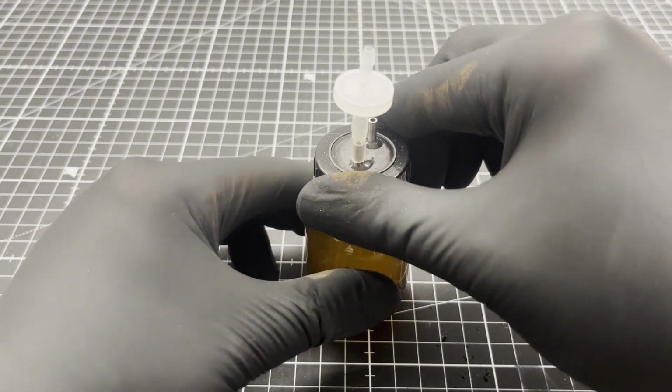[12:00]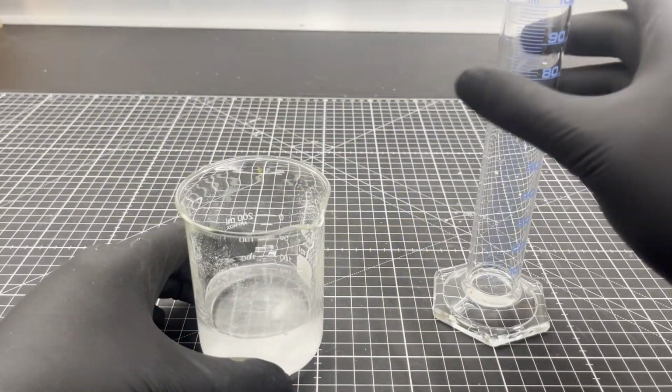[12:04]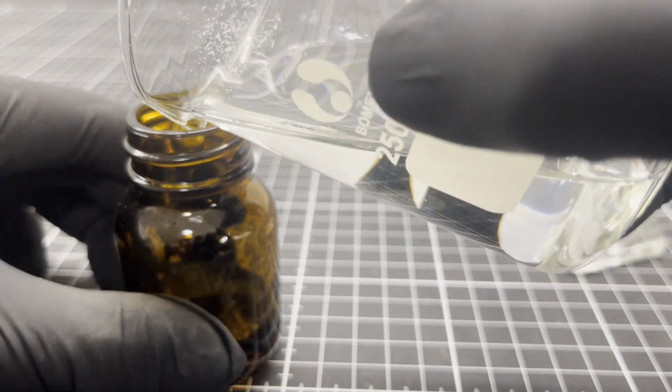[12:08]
While the potassium iodide starch solution cools down to room temperature, 0.15 grams of glucose oxidase is weighed into a beaker. The glucose oxidase is then dissolved in the potassium iodide starch solution, which completes the glucose reagent. The glucose reagent is filled into one of the sampling bottles. Now some glucose solution is prepared and filled into the second sampling bottle.
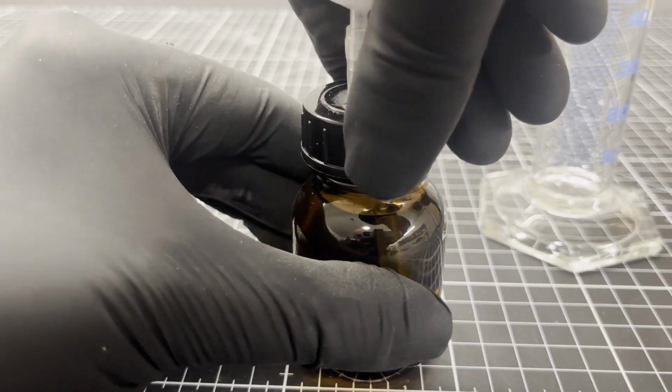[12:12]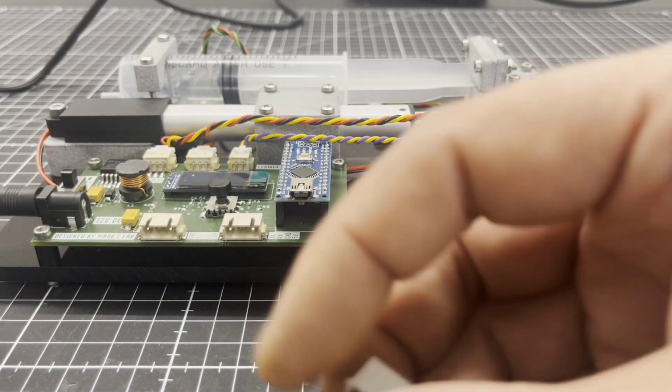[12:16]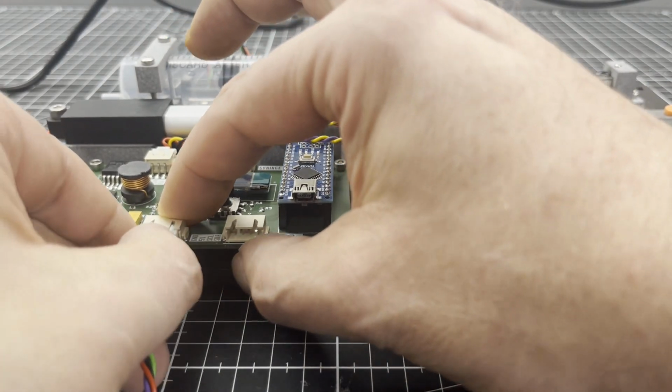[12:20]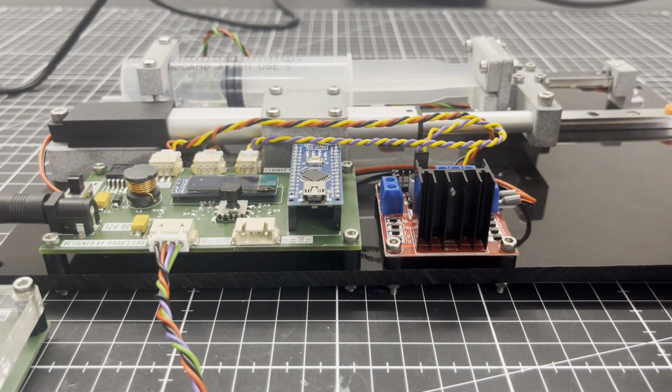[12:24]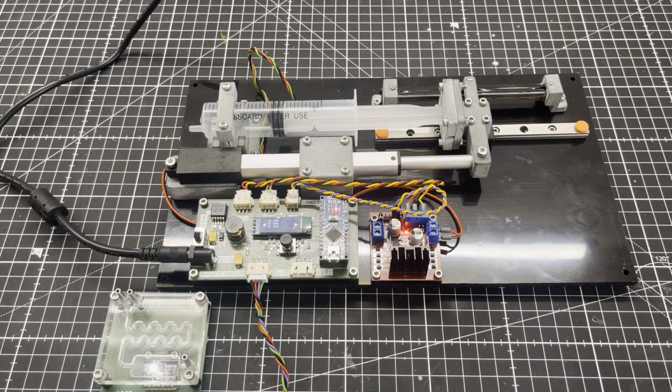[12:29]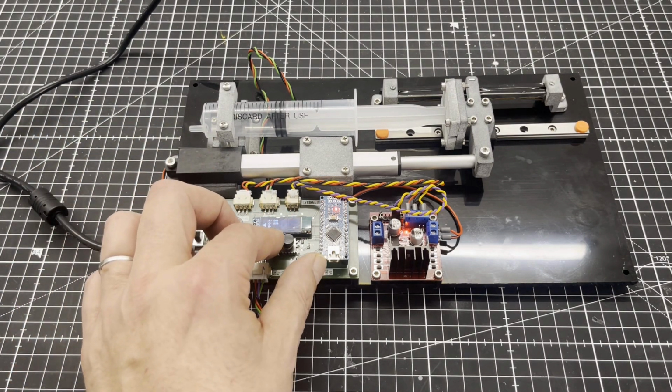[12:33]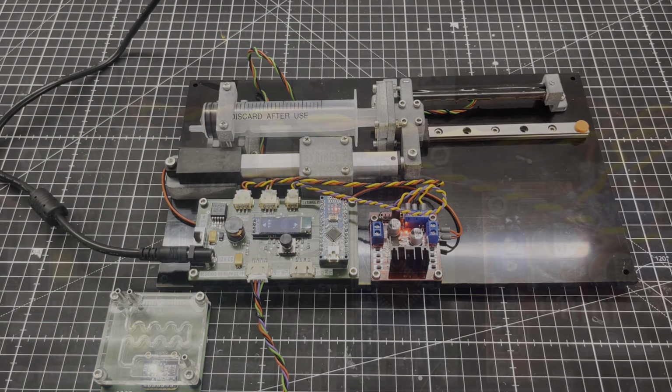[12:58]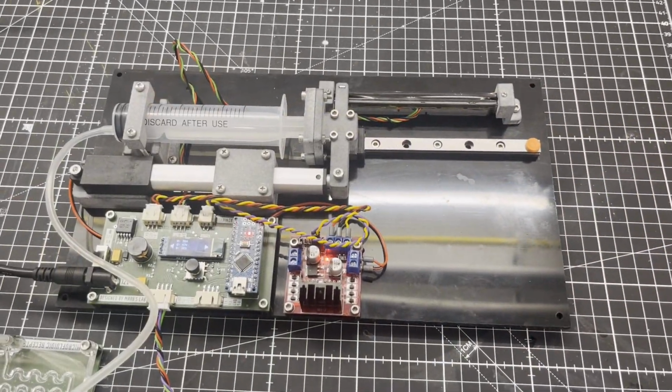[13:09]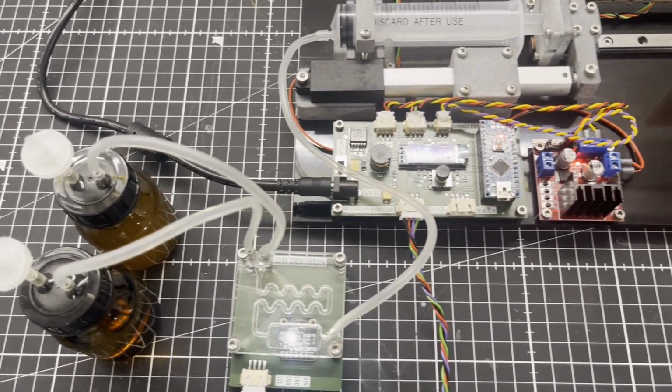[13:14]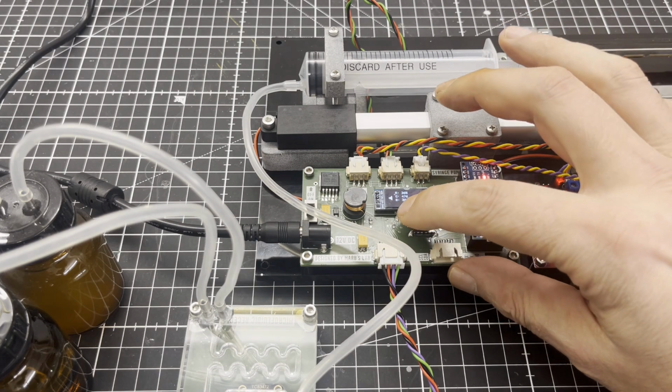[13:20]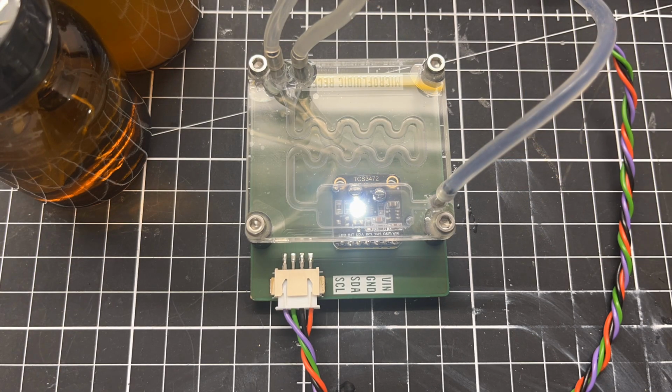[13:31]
The raw RGB values of the color sensor are shown on the small OLED display for demonstration purposes. Here you can see the reaction in time-lapse. Normally it takes about 5 minutes for the reagent to turn blue if glucose is present.
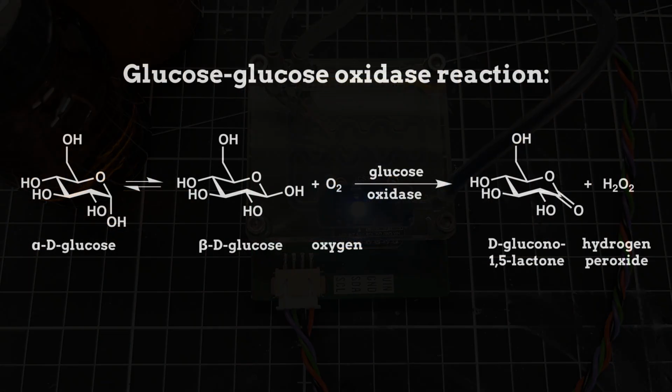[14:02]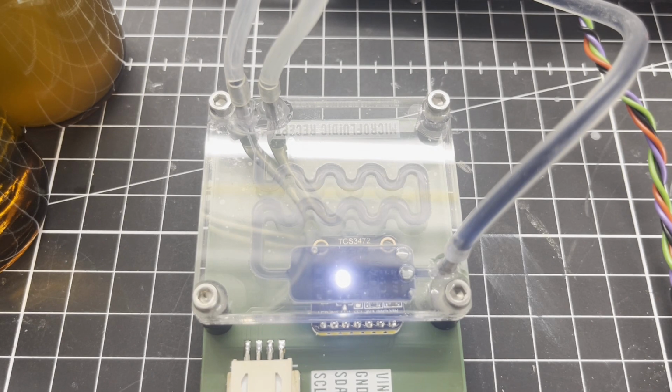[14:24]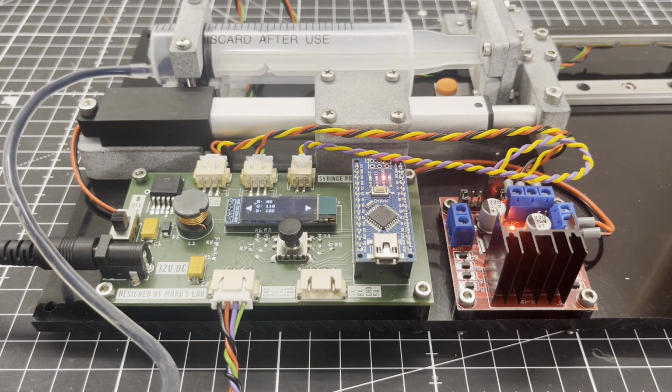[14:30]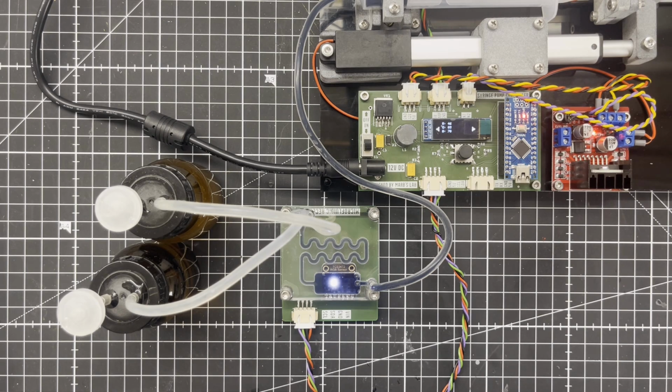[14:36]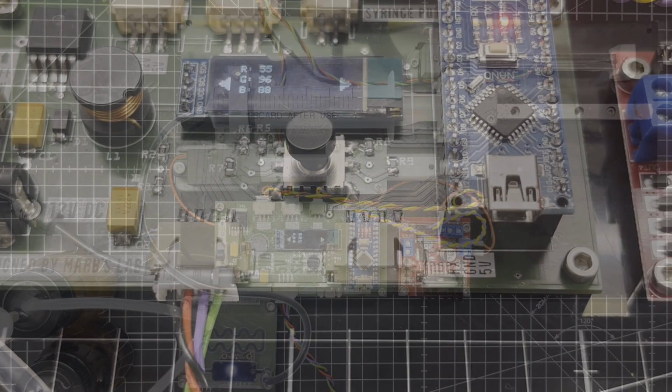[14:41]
In the presence of an oxidizing agent, such as peroxide or chlorine, the iodide in the potassium iodide starch solution is converted into iodine, which then binds to the starch molecules in the solution and forms a blue to violet color. The RGB values have also changed accordingly.